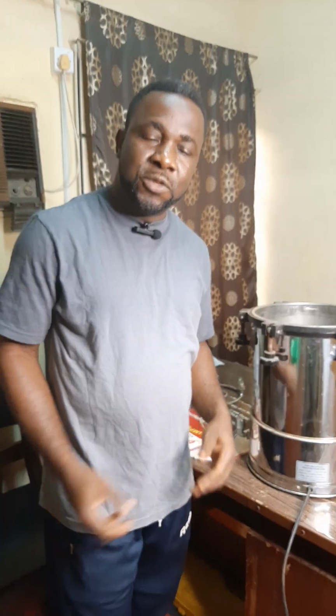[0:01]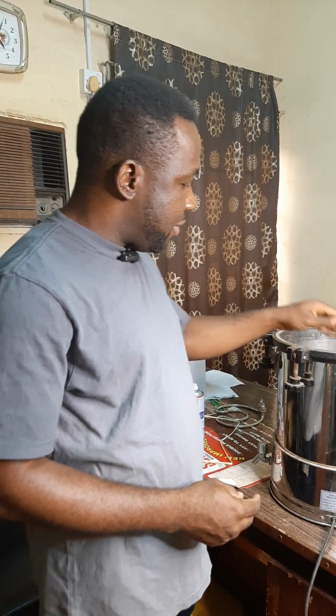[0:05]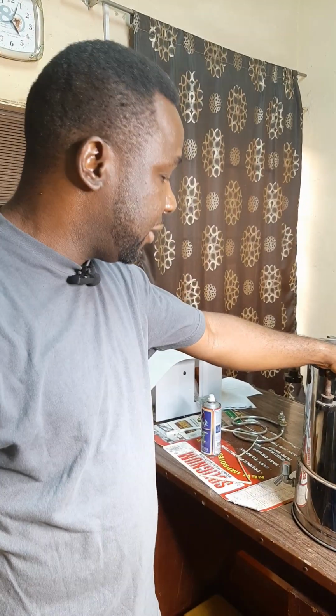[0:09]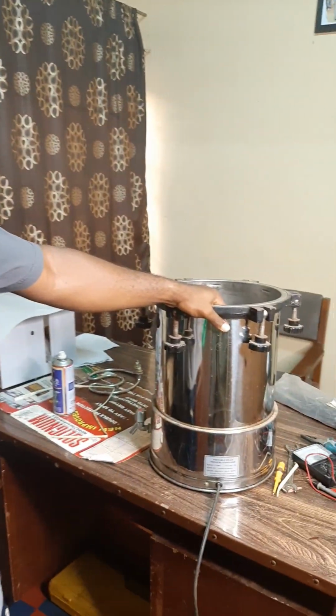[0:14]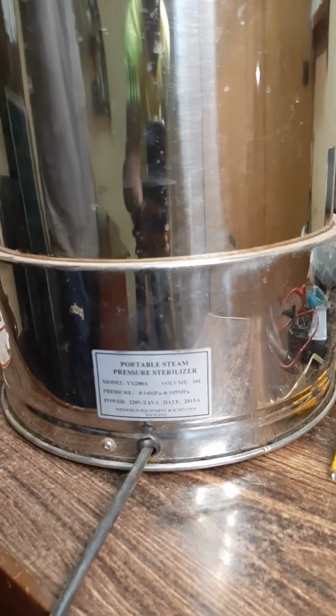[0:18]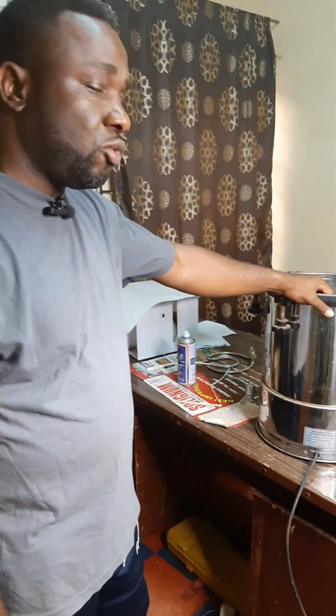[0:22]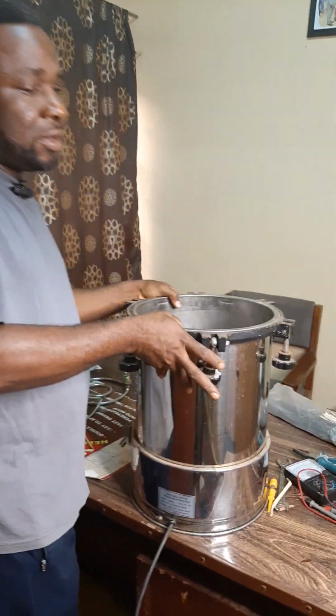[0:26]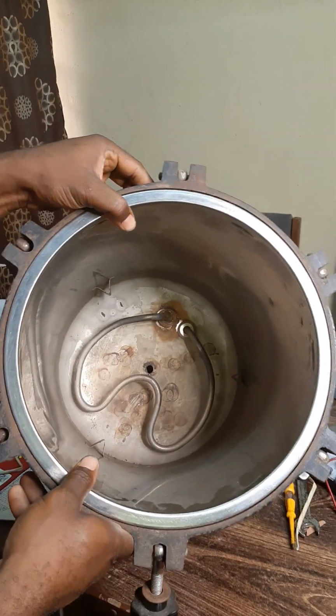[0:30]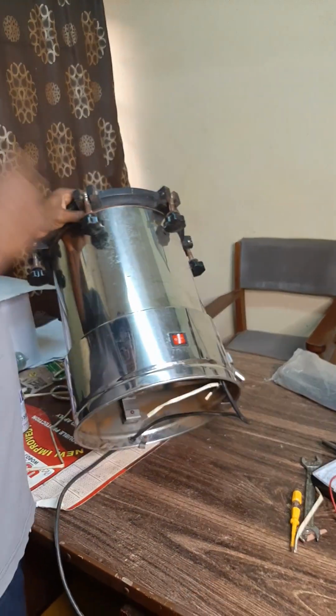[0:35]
I would want to take you through the repair of this medical equipment called a sterilizing machine. This very machine is faulty, so we are going to look at it and find out what the problem is. Although we've been able to test and found out that this element inside has burnt, so we are going to change it.
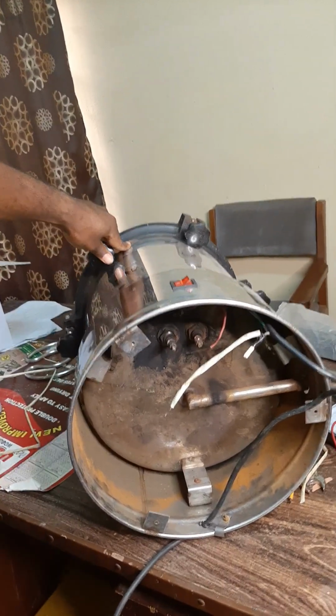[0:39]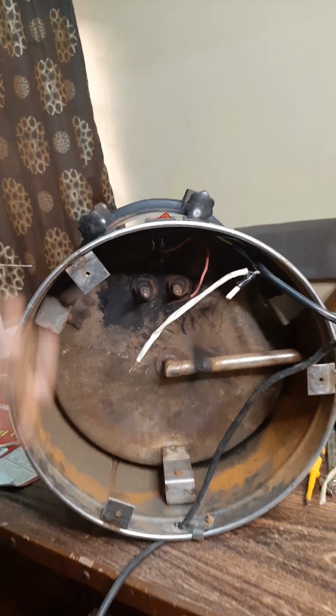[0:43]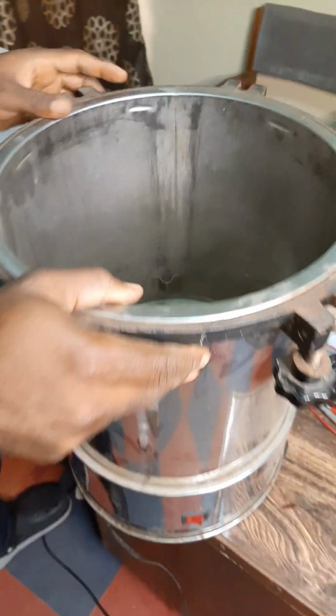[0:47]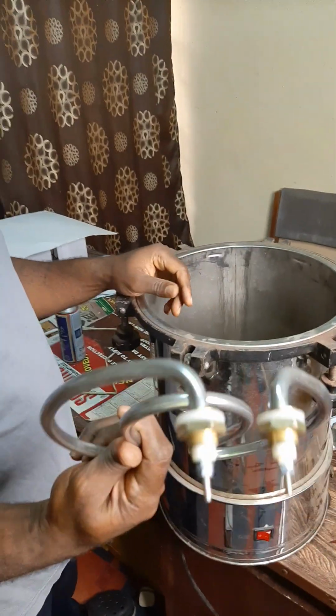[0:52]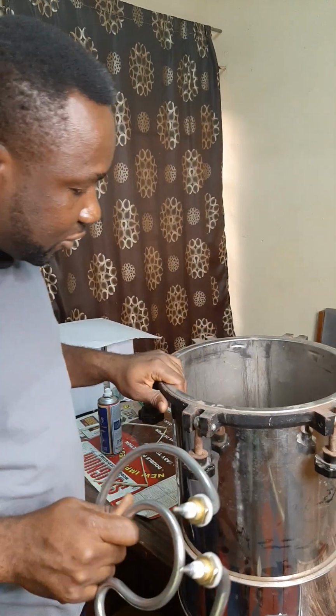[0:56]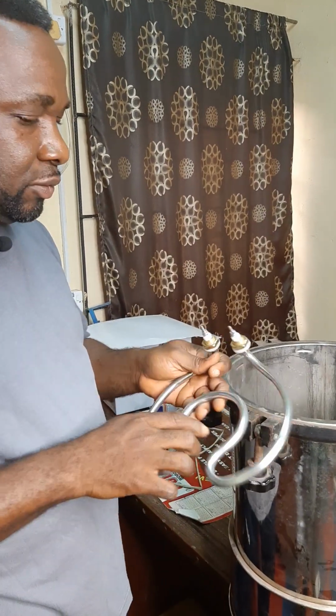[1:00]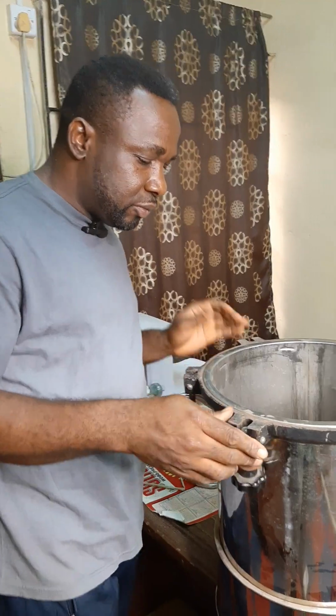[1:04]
Oh, so this is the base on the connection. So I am going to replace this element in here with this new one. We are going to use this new one to replace this. It is 3000 watts by 220 volts. So I am going to use it to replace it.
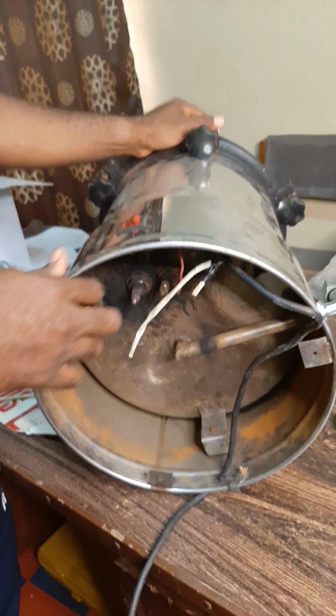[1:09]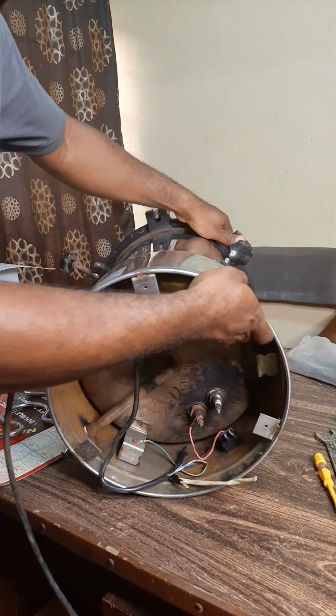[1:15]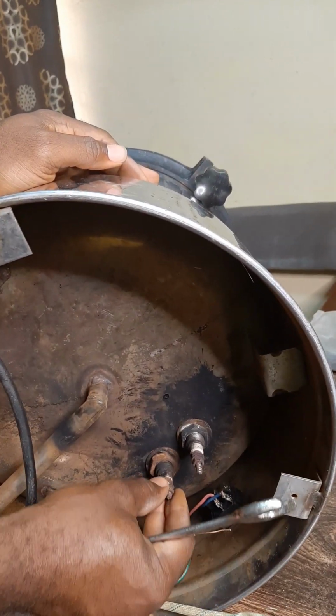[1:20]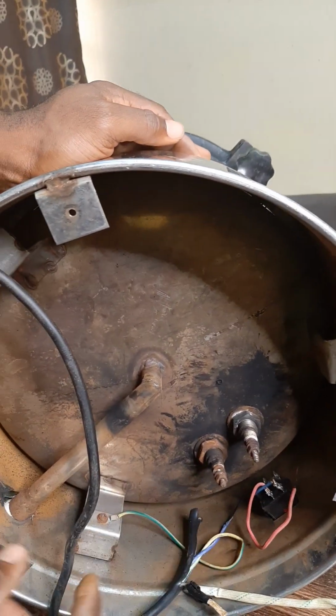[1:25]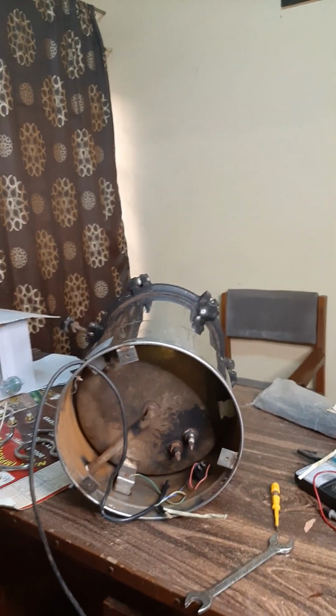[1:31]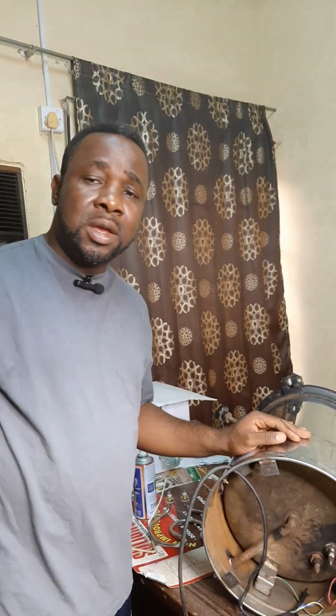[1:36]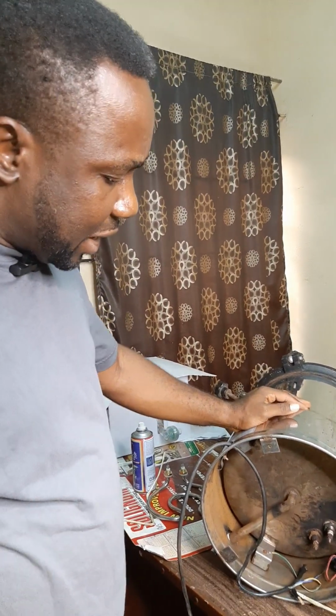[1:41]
So basically what I'm going to do is to close this switch, the element here. Let me separate the switch terminals. This is the switch that is connected to the supply cord. So these are the three components of this machine. It's used for sterilizing of medical instruments and the rest of them, depending on what you want to sterilize. So let me loosen them.
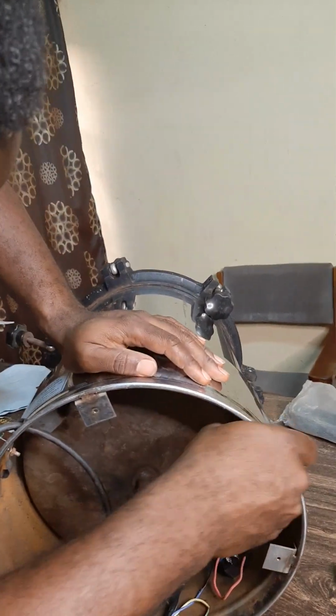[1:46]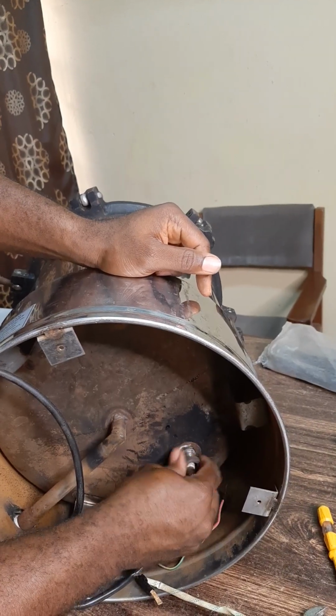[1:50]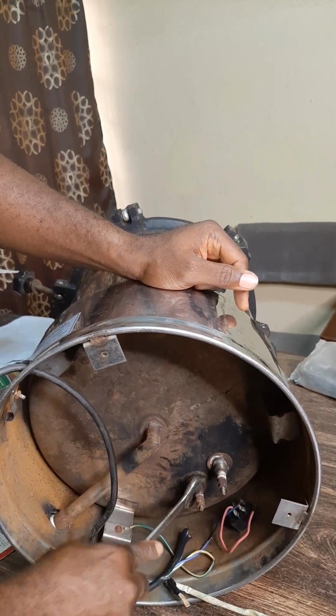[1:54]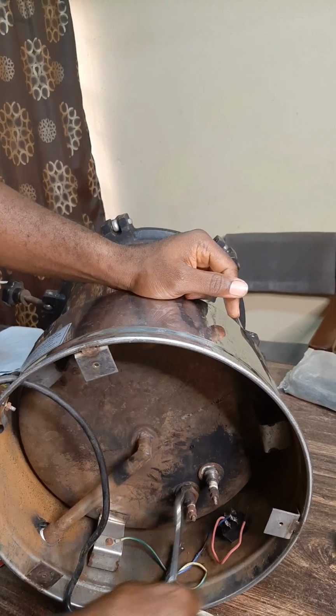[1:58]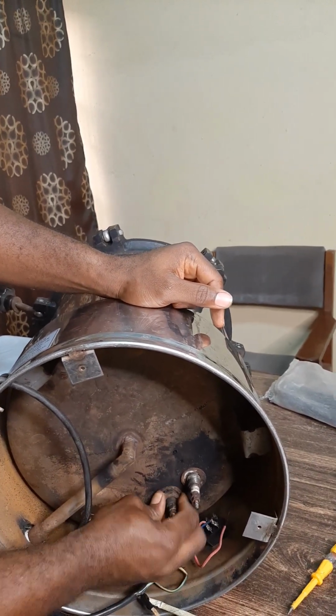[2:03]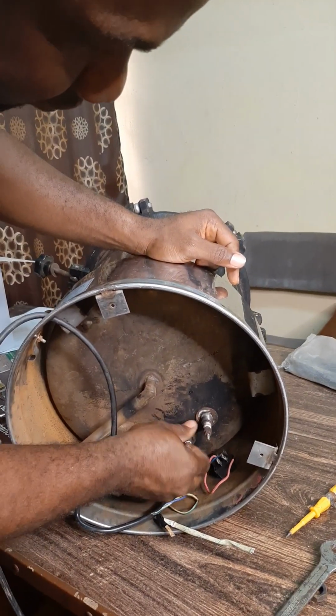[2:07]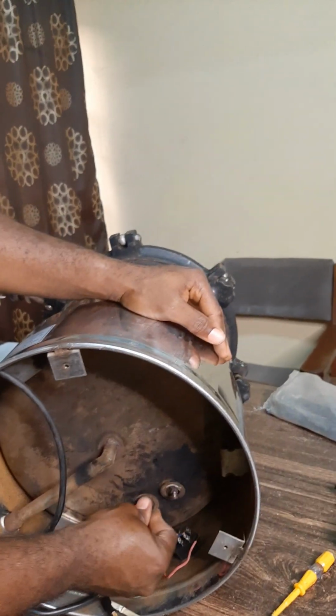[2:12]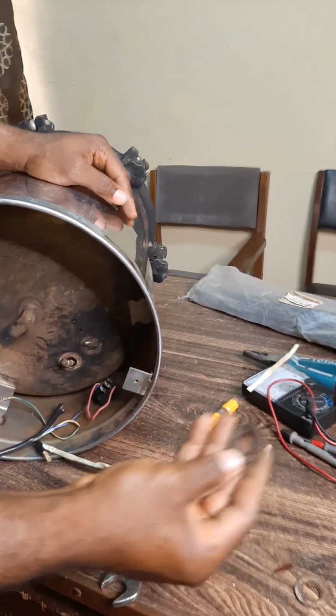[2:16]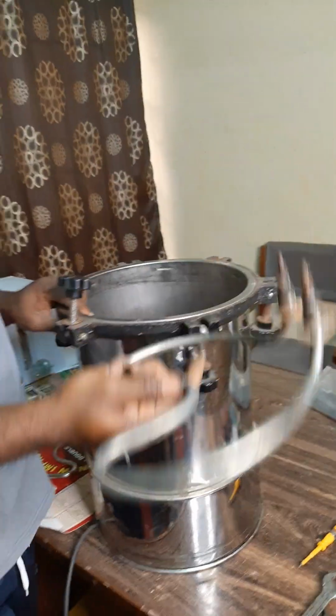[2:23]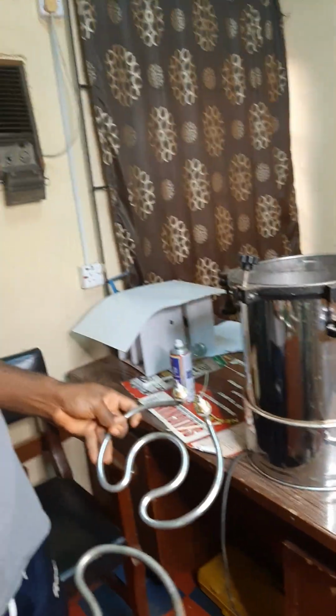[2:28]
Okay, I'm still loosening it. Okay. This is a washer. I'm going to file it. This is a washer. I'm going to clean it. So this is the element in question. So I am going to use this one to replace it.
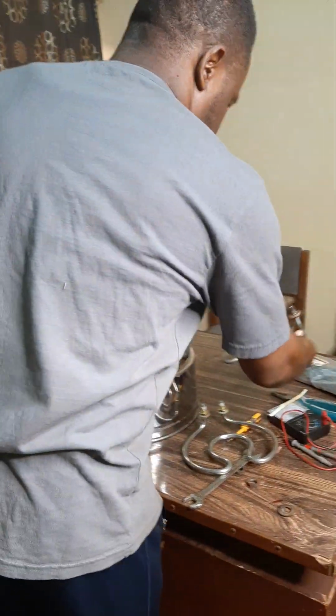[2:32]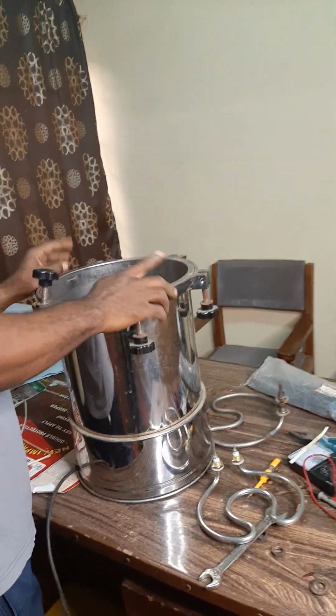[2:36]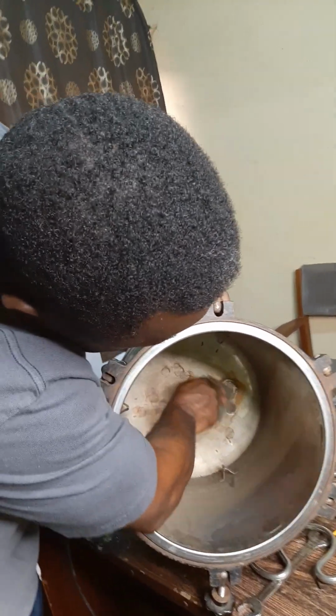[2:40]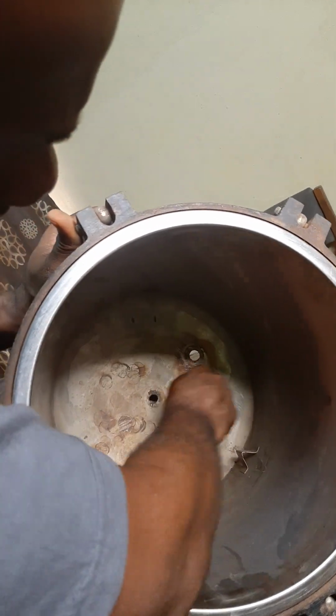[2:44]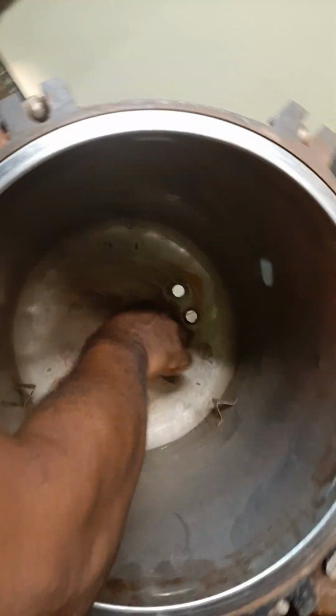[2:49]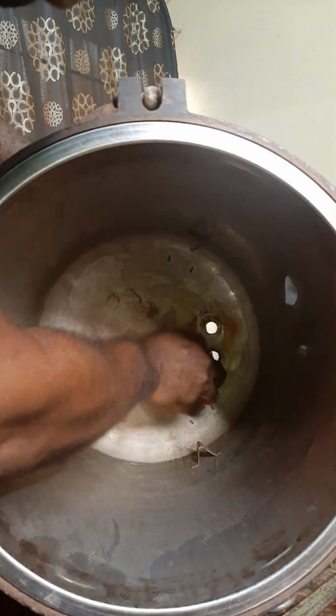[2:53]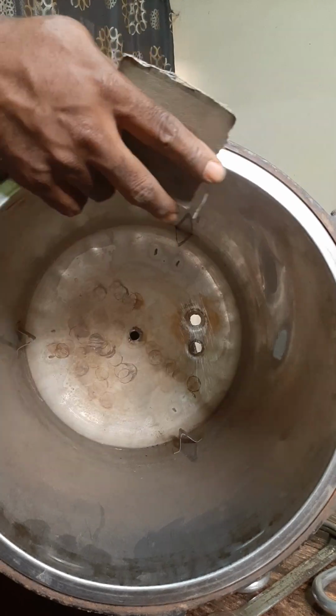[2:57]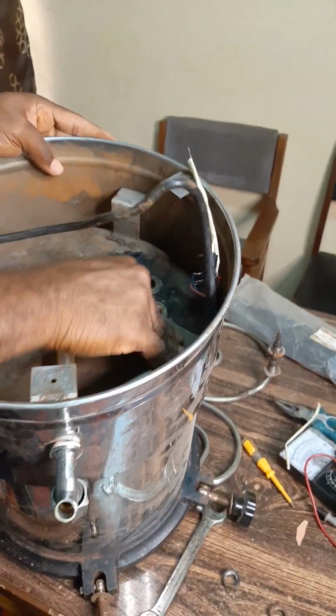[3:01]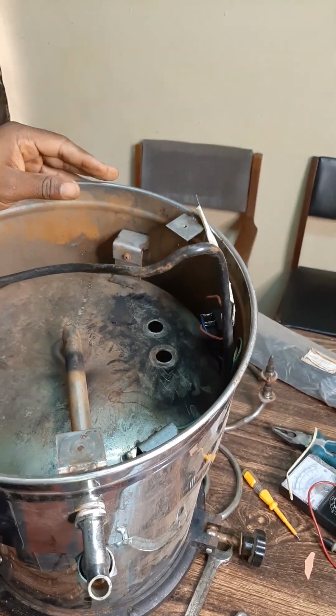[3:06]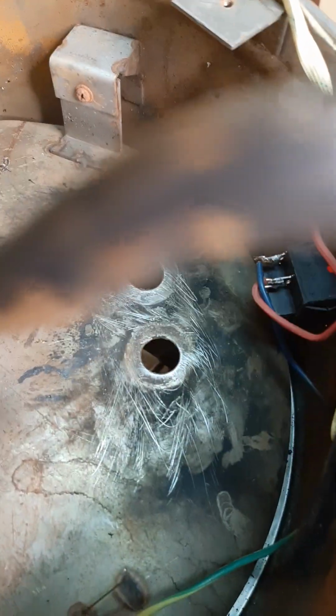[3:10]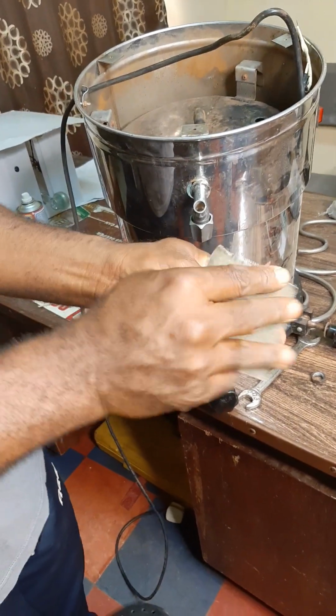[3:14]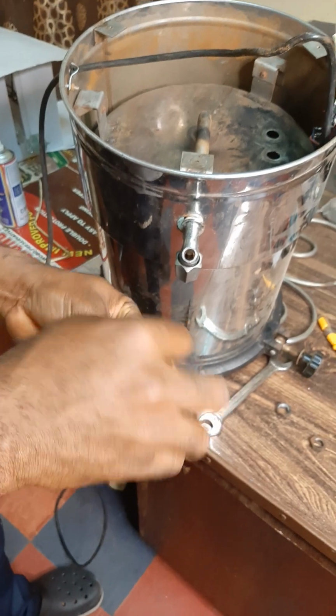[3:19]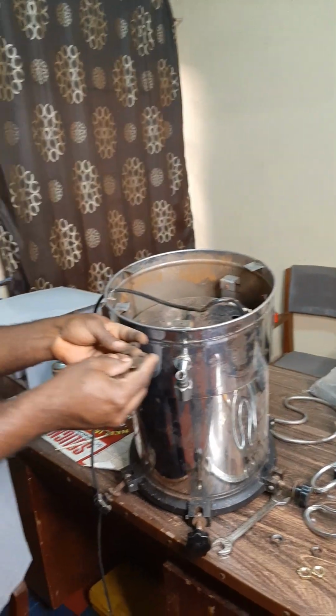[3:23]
I'm going to use some paper to make it clean so that the water will not leak. You don't want to leave any particle here. So do the same thing at the bottom here. Okay, you can see how clean and smooth it is now. Then I'm going to clean these as well because there are a lot of particles here. We've been able to sandpaper the washers very well.
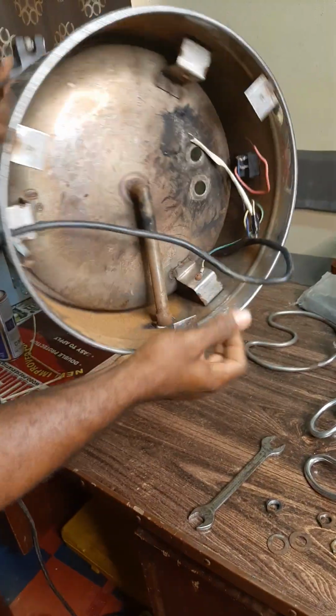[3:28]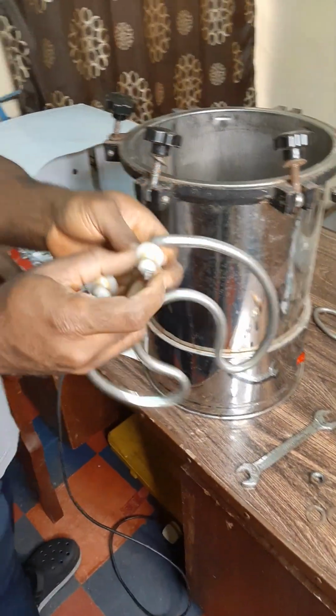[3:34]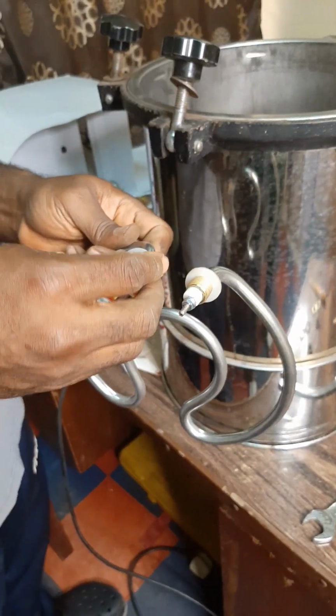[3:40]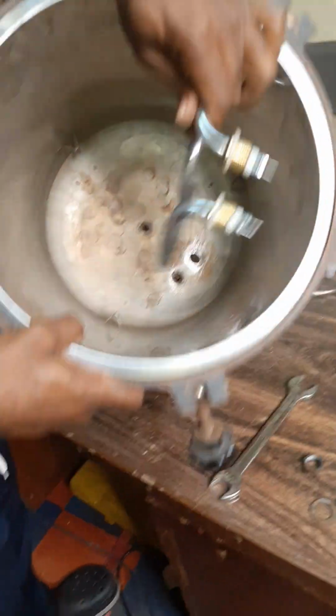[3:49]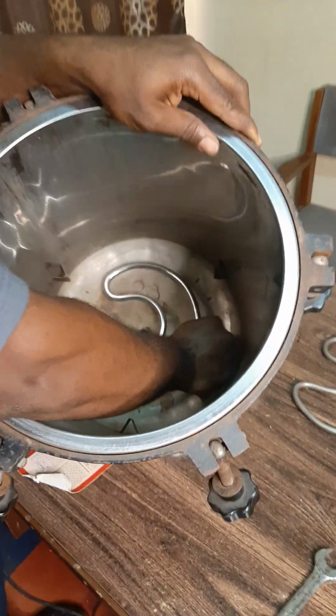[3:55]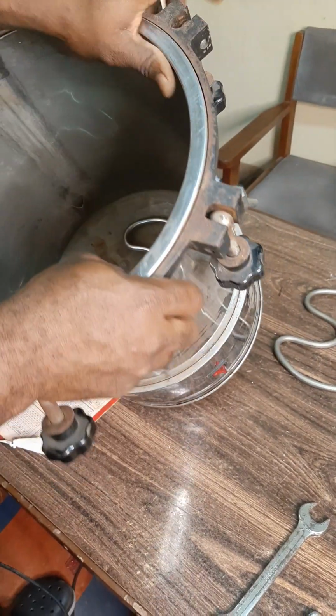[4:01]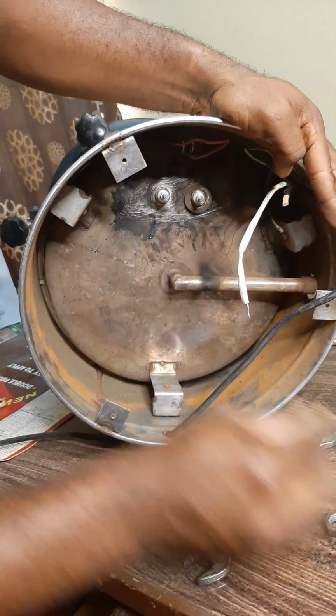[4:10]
What I'm going to do is that I'm going to burn it. Okay. This is the seal here of this element. So just like I have been teaching, you have to be very, very careful when tightening. So you can see the fitting is perfect without any adjustments. Okay, so what we are going to do here is just to add back these washers.
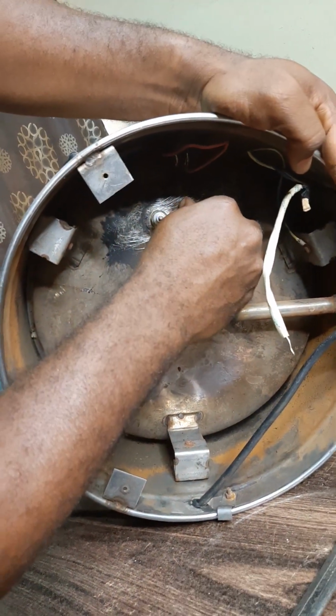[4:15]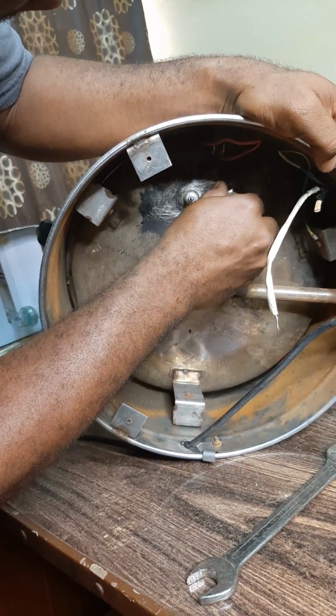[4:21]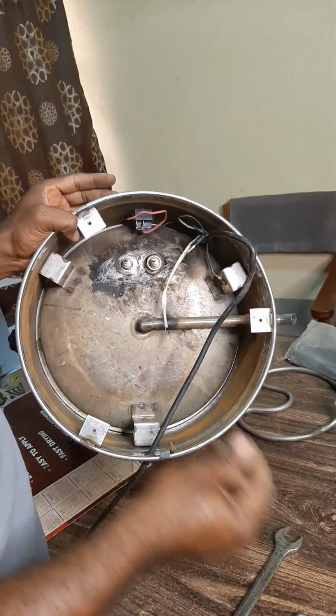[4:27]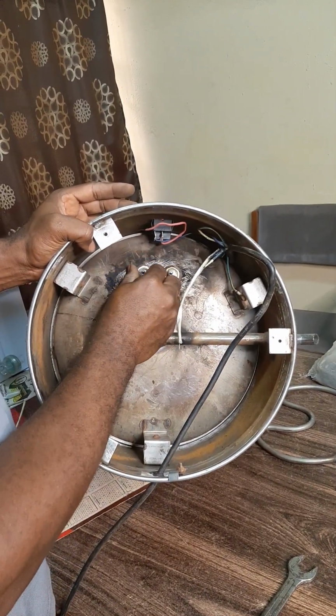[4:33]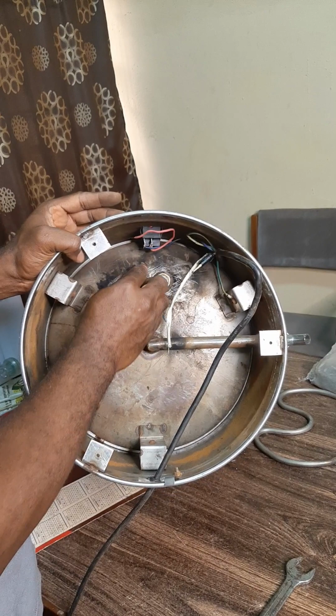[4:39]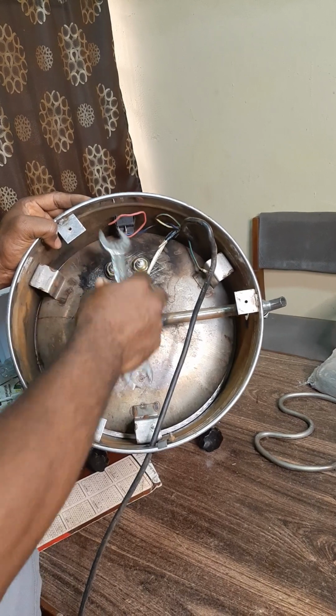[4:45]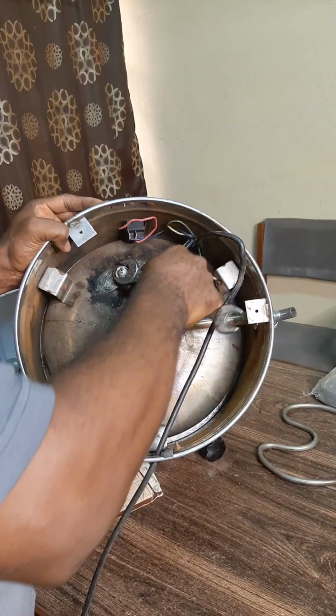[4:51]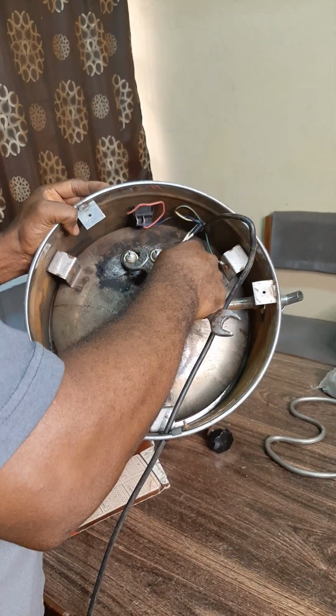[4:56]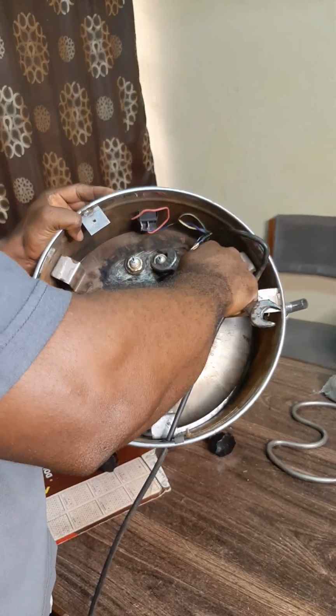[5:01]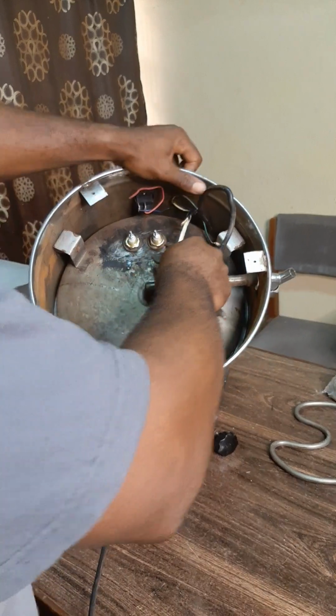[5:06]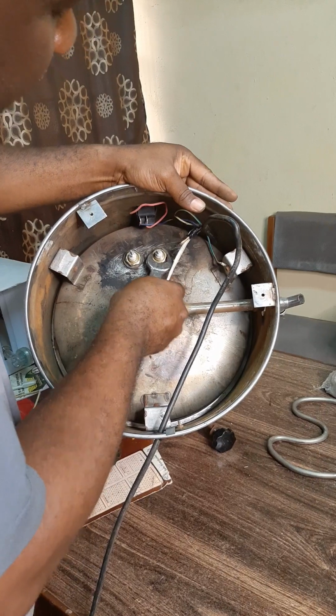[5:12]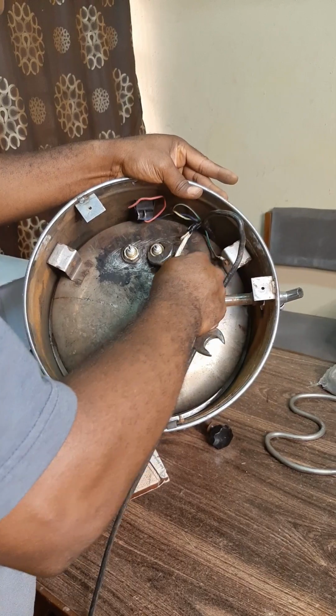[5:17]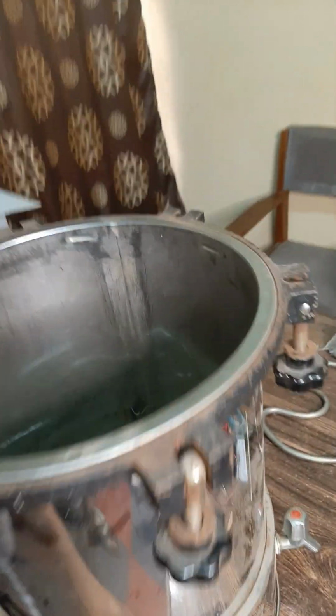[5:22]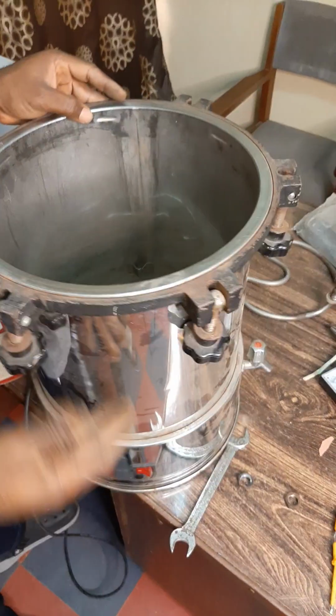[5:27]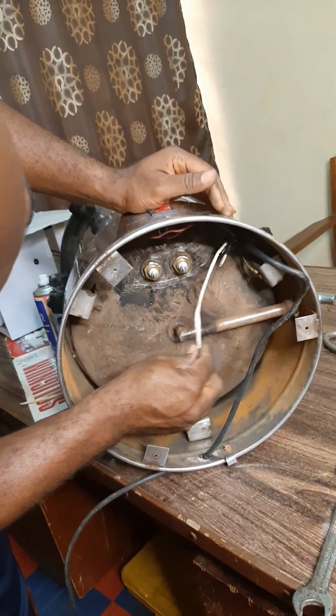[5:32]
You tie it with caution. So, I've been able to achieve this. So, let's look at it. You can see the fitting well fitted in here. So, the next thing we're going to do is to do the connection.
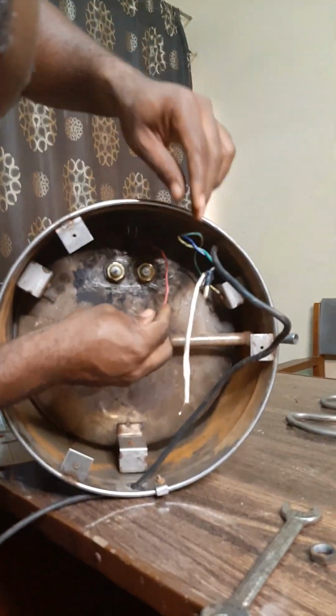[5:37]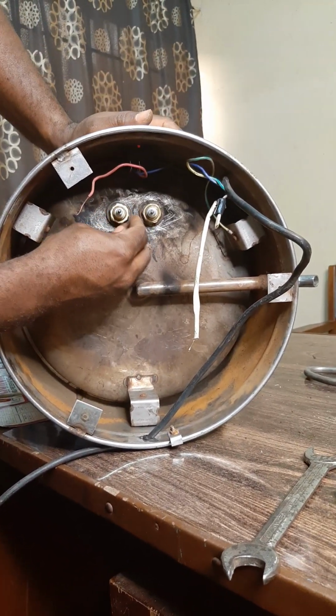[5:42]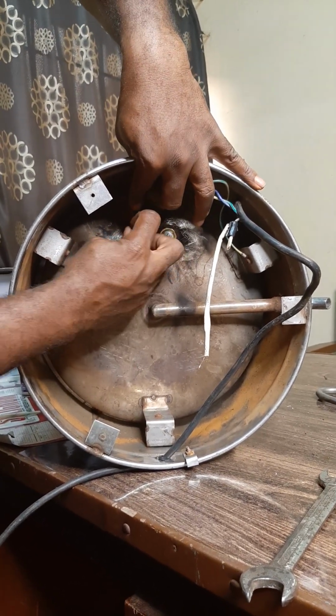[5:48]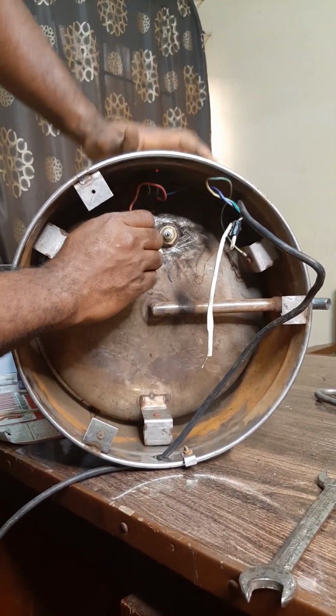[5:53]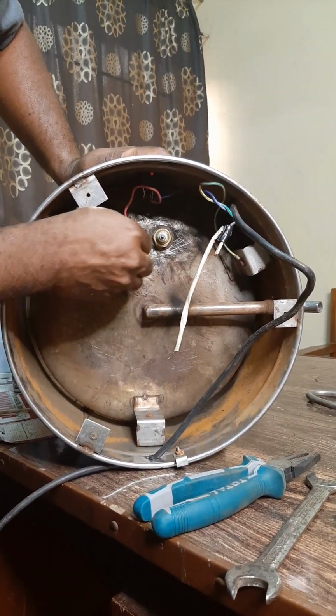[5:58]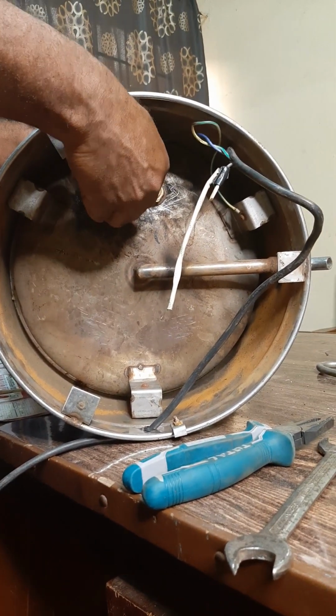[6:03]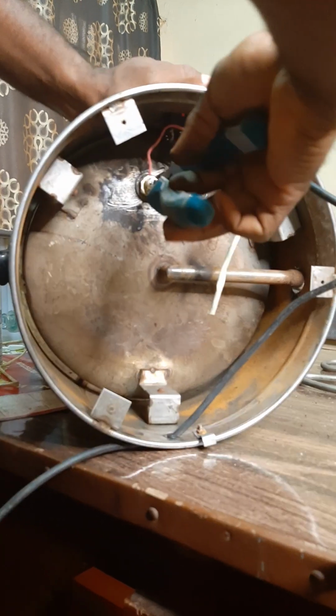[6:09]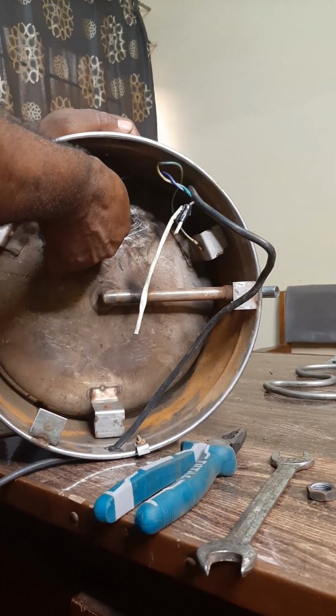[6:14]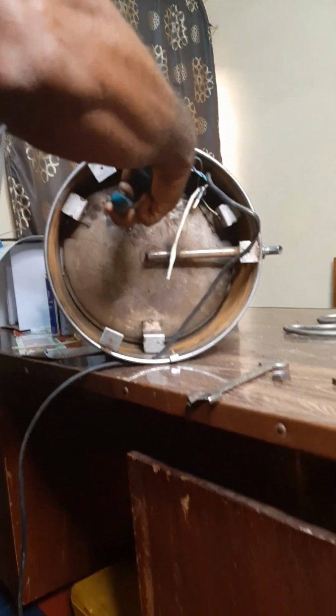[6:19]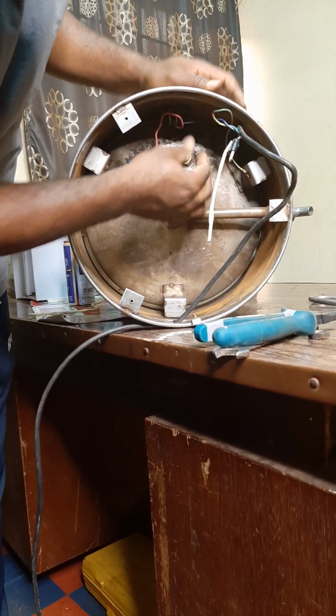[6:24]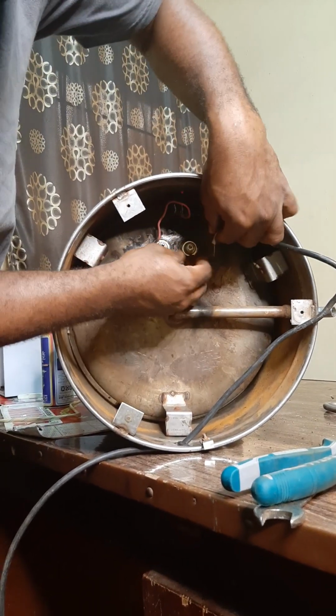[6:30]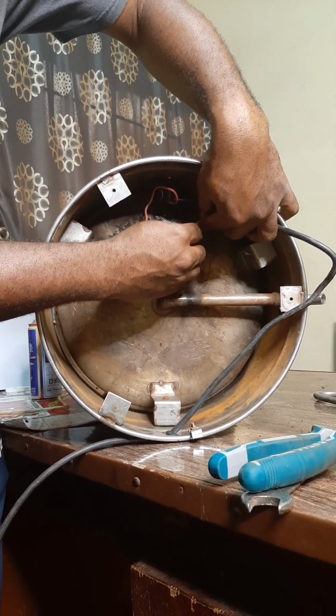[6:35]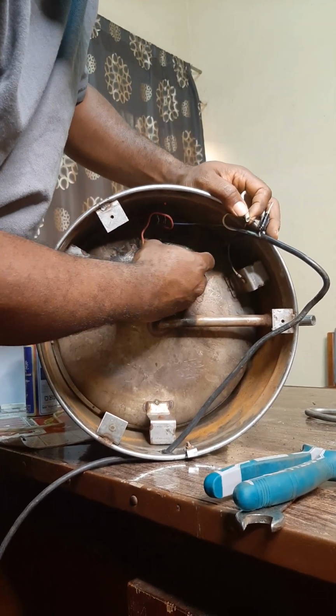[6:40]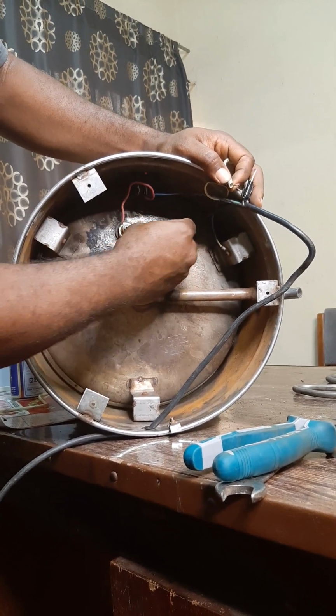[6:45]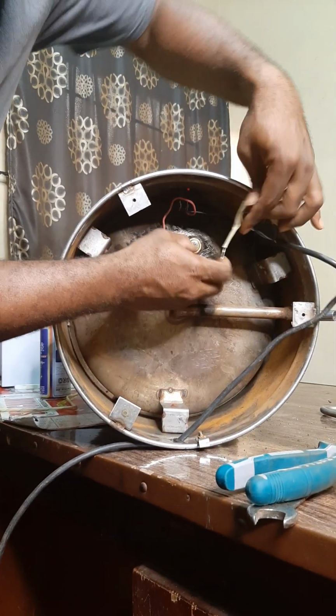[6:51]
This is a supply cord and the switch cord here. One of the switch will go to the elements. Then one of the supply will as well take the second leg of the elements. So what I'm trying to do is to put the wire in between the washers so as to have a firm grip.
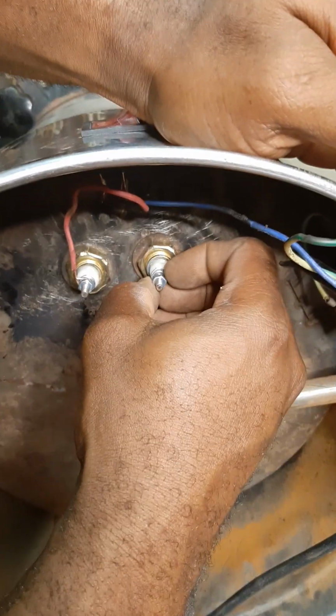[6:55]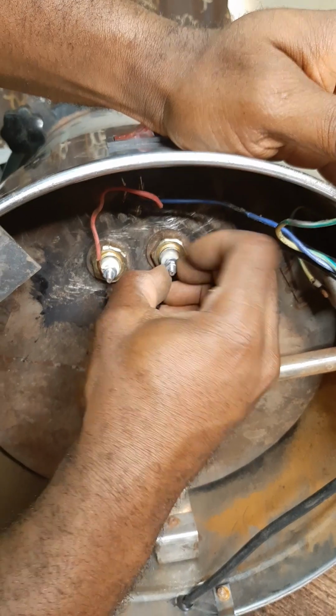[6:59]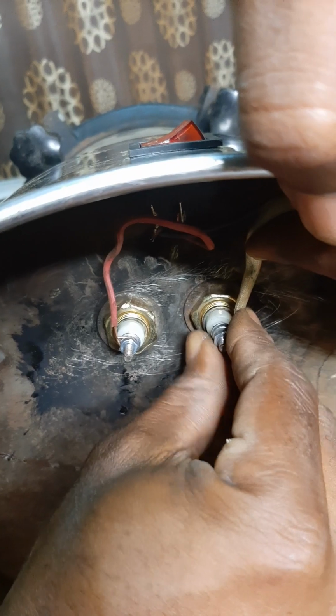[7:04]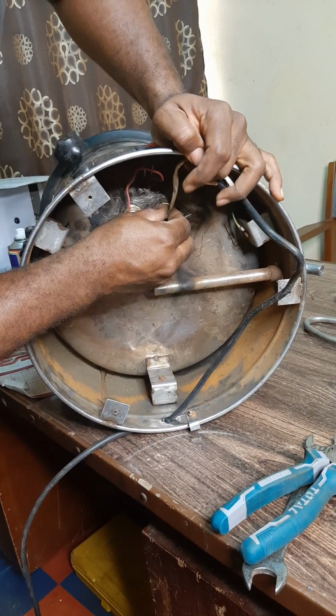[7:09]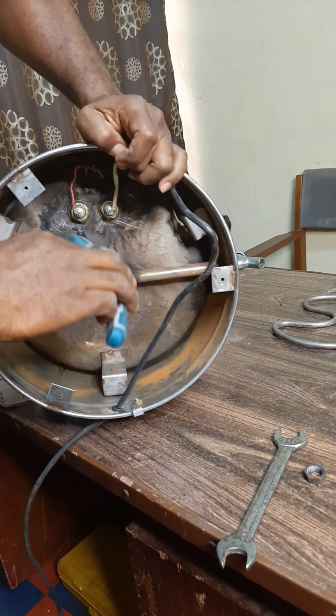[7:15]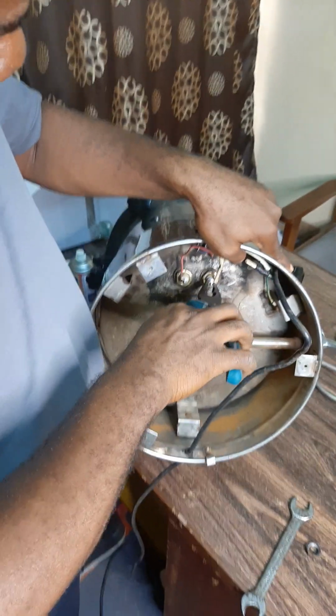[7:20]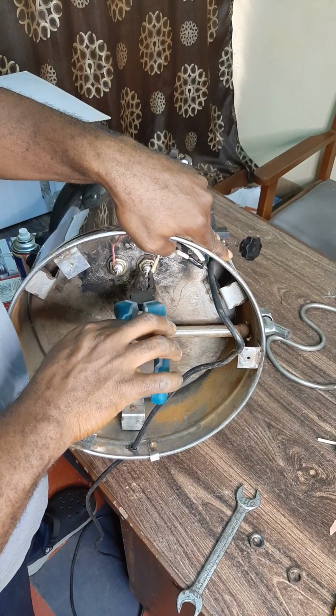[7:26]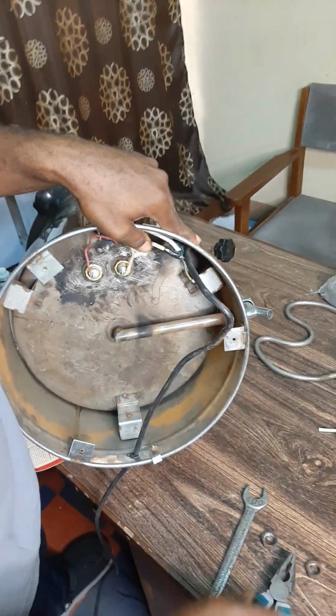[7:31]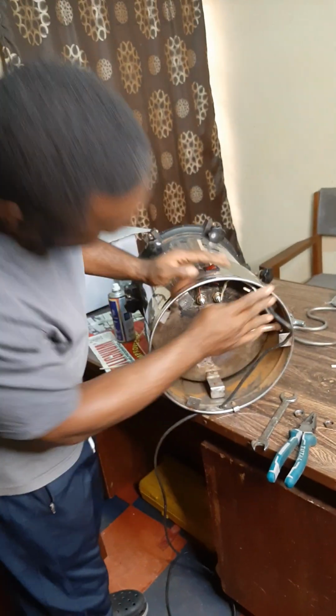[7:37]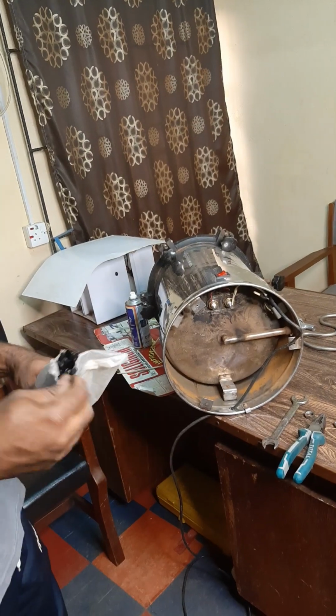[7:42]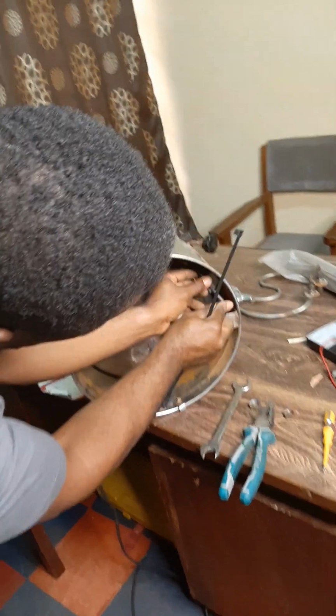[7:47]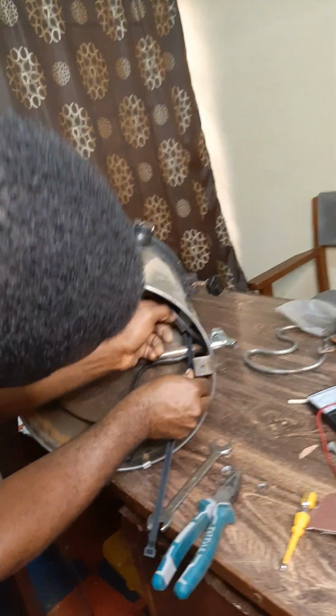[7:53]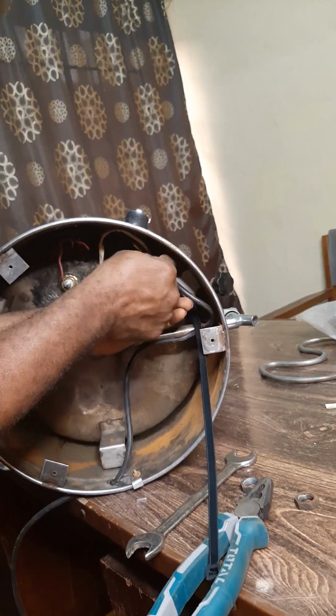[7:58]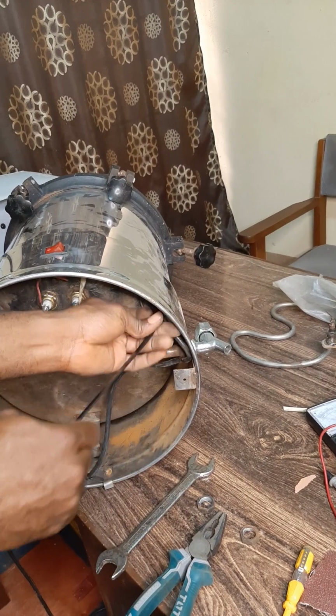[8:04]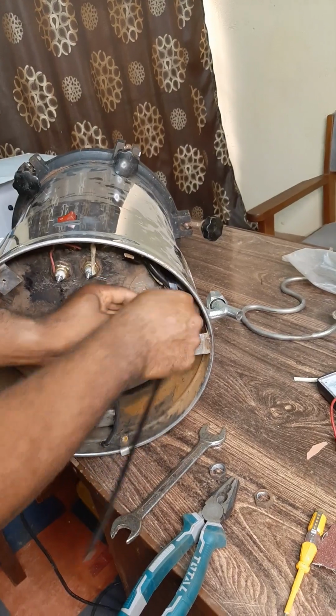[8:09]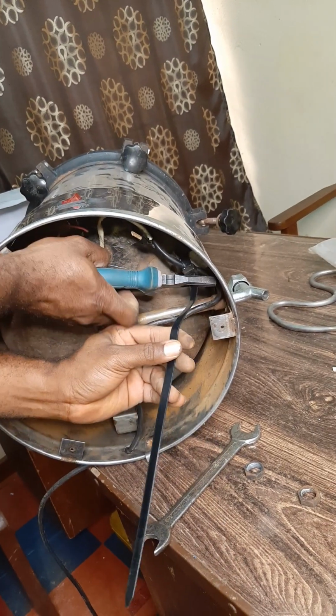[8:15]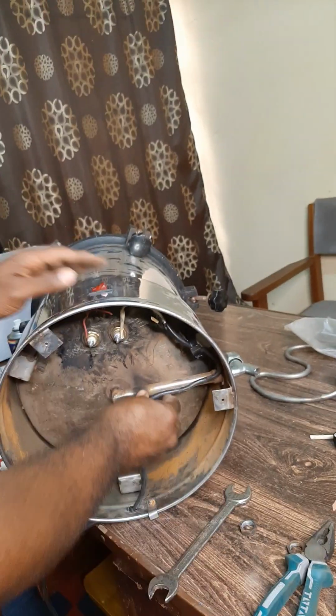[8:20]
It's very important. Okay, now I have been able to complete the connection, but this wire will not lie like this. So what I'm going to do is to use what we call a belt clip and tidy up here. This is firmly fitted. Here we go.
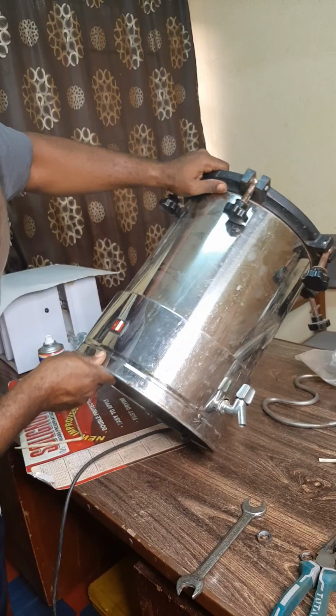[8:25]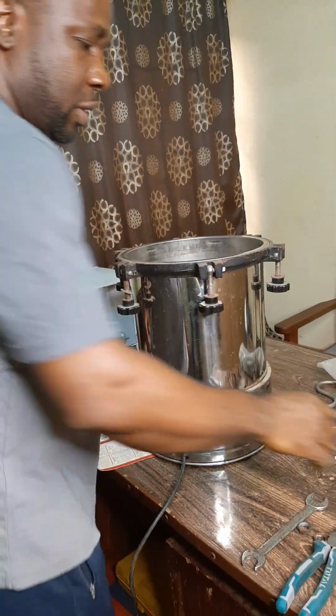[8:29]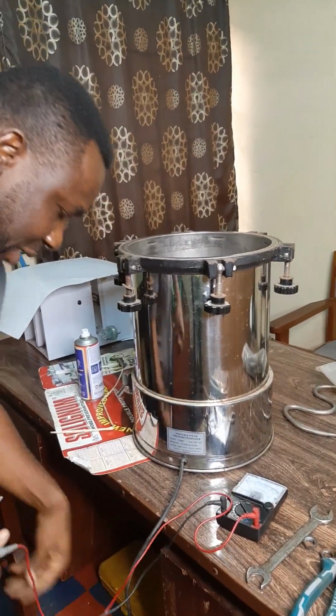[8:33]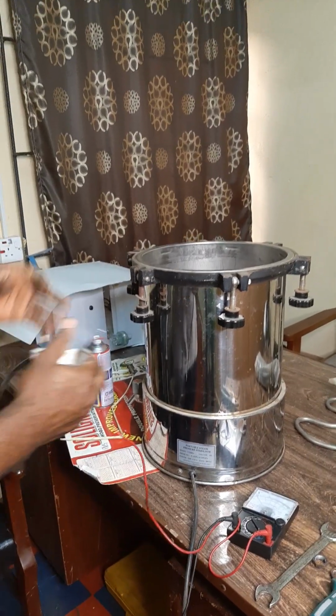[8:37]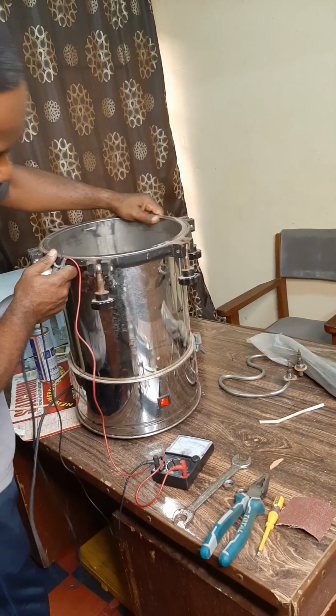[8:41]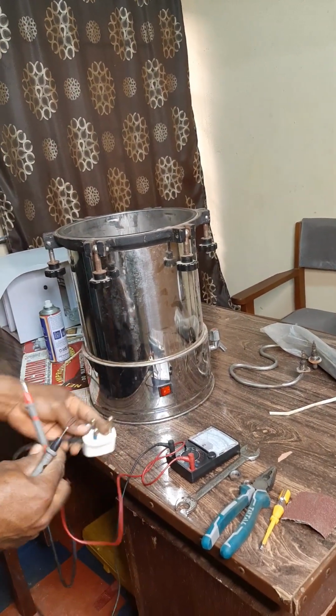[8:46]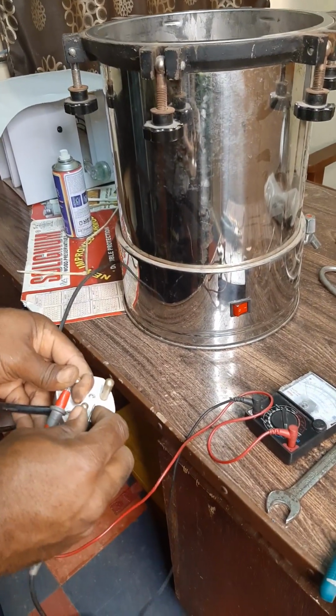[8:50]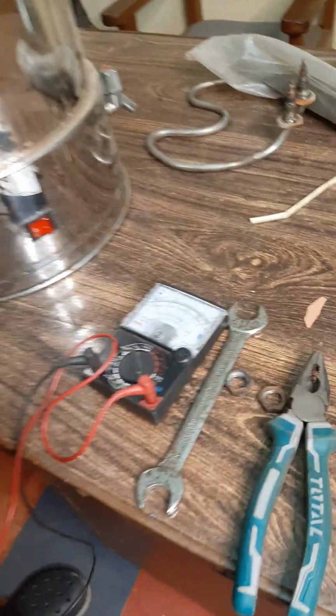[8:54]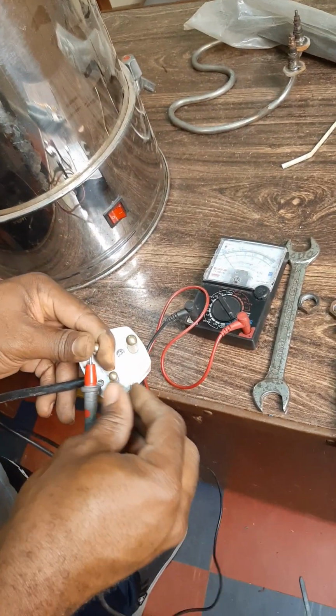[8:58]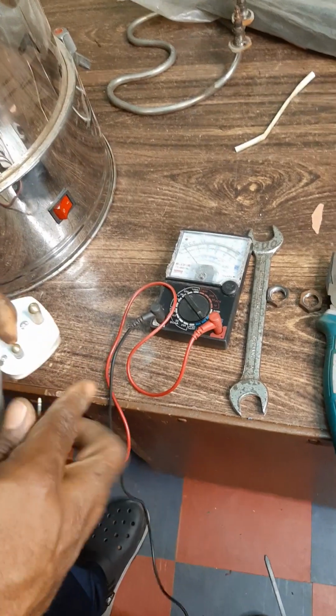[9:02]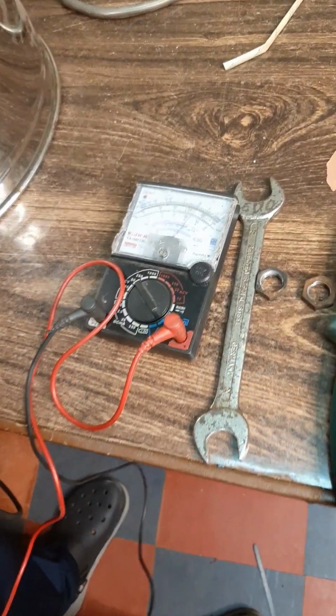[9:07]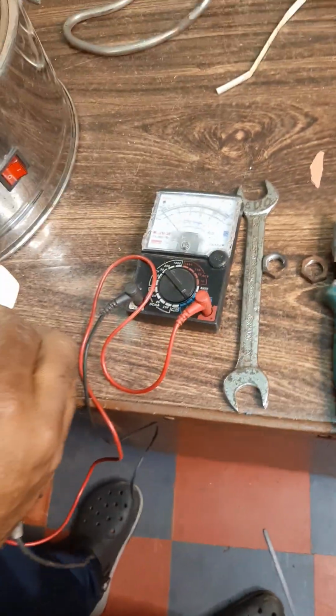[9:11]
So we've been able to complete the replacement and repair. So what we are going to do right now is to test and see if there will be resistance or not. Okay, so this is off, let me put it off, it is on the off position right now. Zero is off, so I'm not expecting any reading. Then one is on, so we should expect reading from the meter. Can you see it? This is off, you can't get any reading.
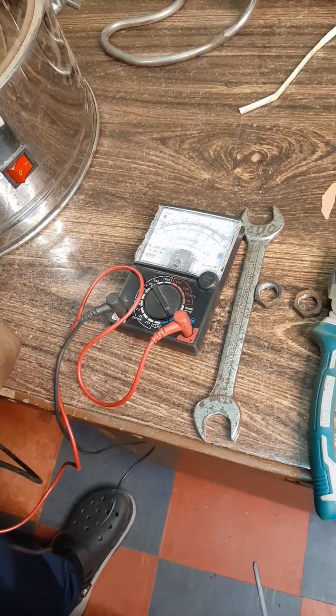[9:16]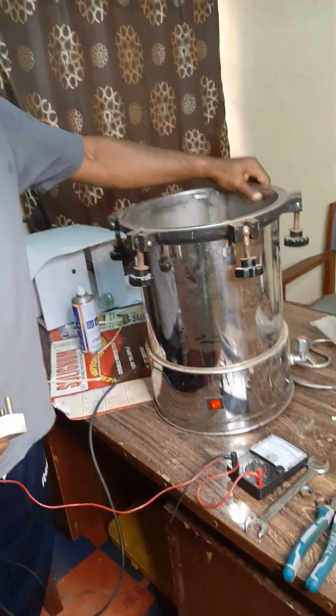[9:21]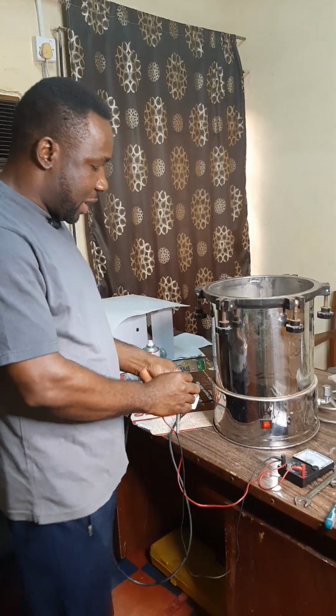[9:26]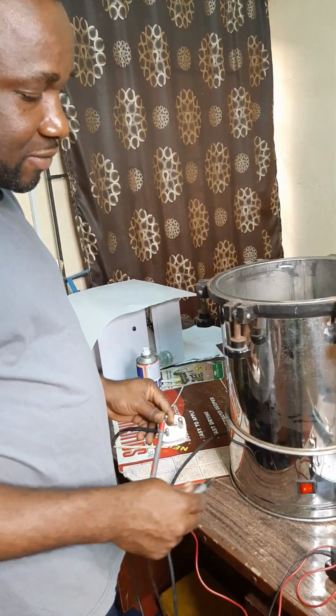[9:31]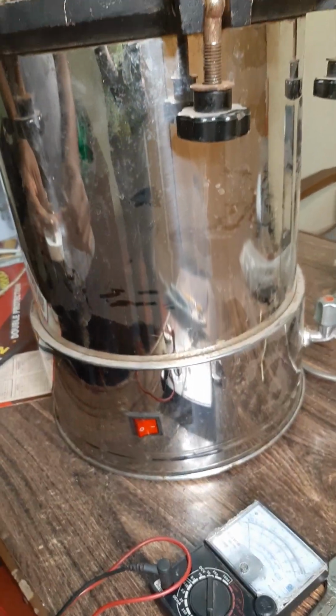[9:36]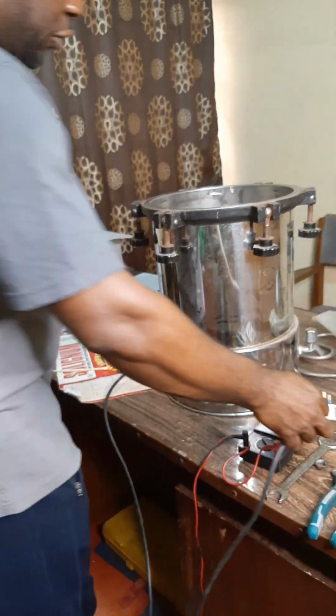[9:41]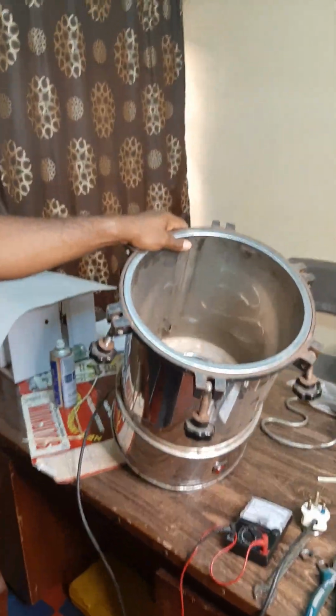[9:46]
And this is on. So what we are going to test again after you must have finished the repair, you test for earth leakage. It's very important. So let me test for earth leakage. I'm going to test the two terminals, that's the positive and negative, to the body of this. You can see it's not reading. So you've been able to see how we are able to replace or change the burnt element of this sterilizing machine. So it's now good for use.
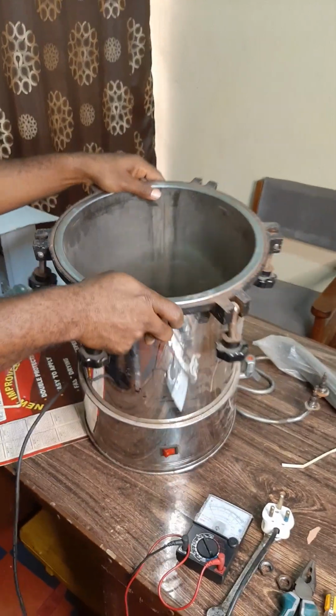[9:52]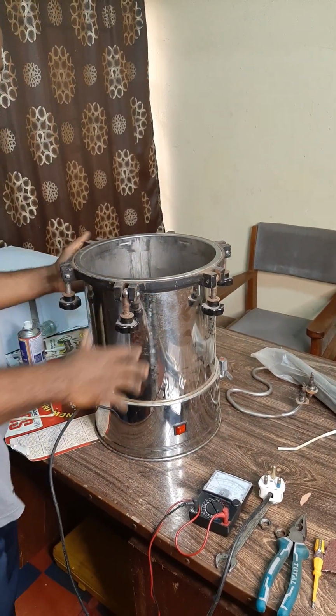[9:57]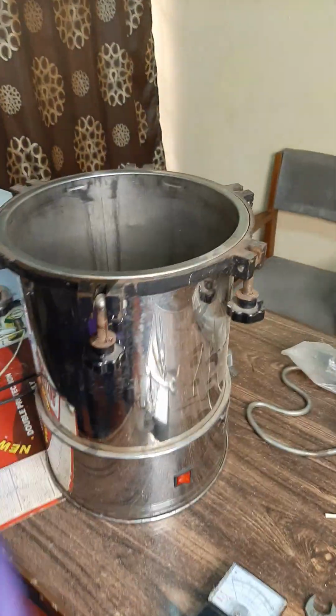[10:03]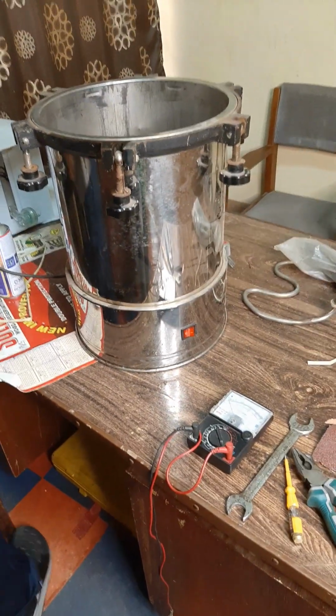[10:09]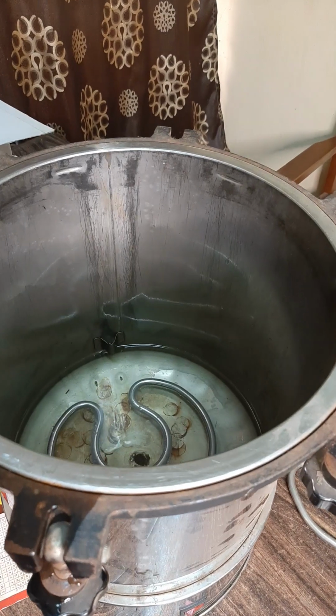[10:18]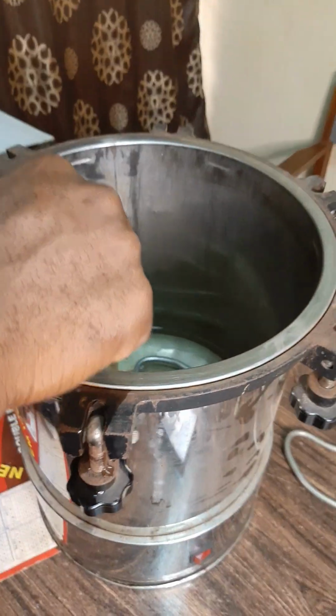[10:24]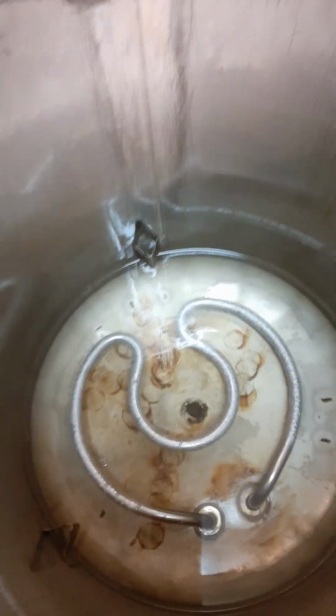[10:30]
Maybe let me add some water and show you a little experiment. Okay, I've been able to add some water. So let's plug it. Okay, let's just give it one minute. Yeah, it's boiling. Come closer so that they will see it. Wow, this is very fast.
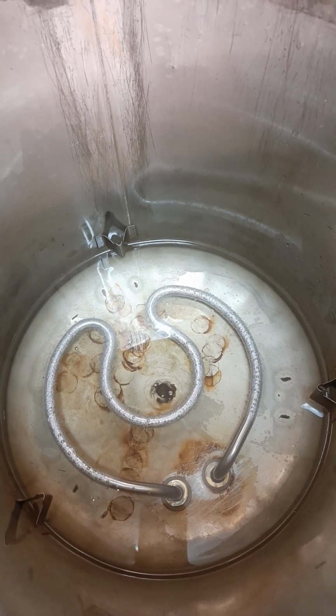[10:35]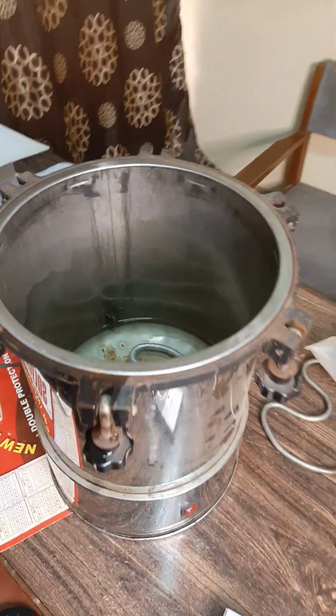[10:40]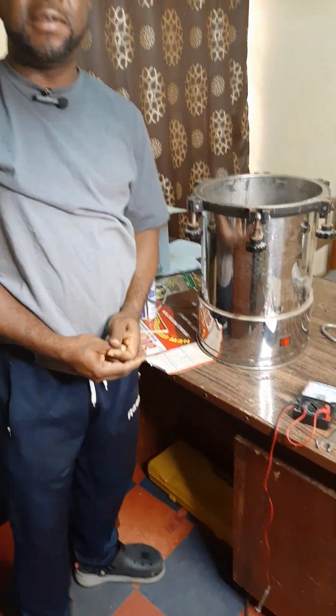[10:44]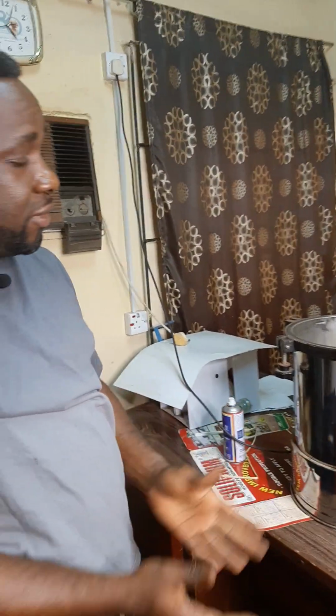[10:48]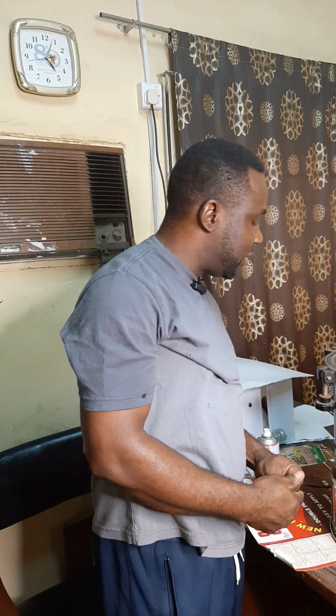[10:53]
So you've been able to see how to repair or replace a burnt heating element of a sterilizing machine. It's so easy. I don't think there is any big deal in doing all these things.